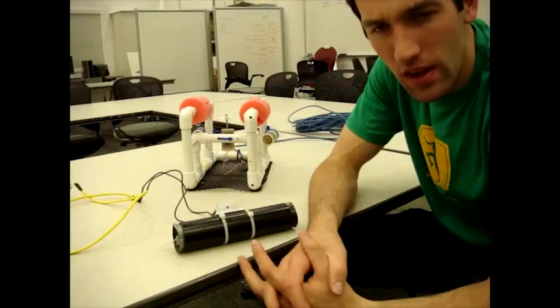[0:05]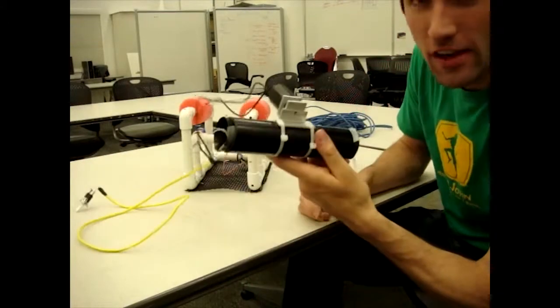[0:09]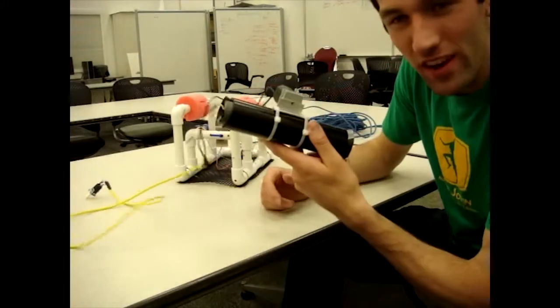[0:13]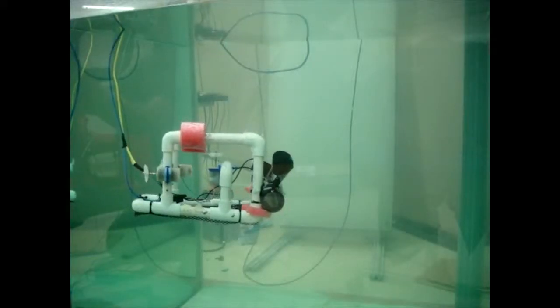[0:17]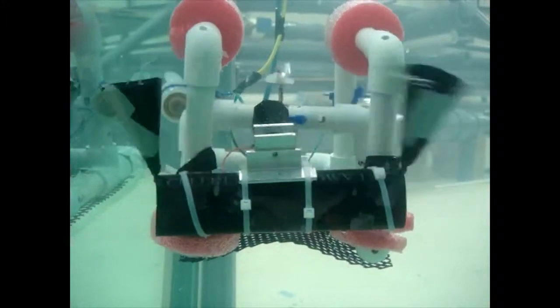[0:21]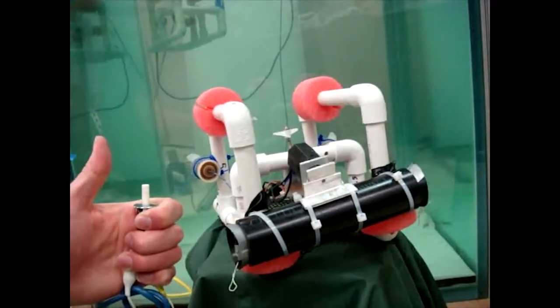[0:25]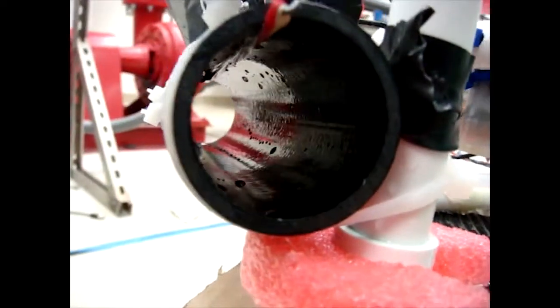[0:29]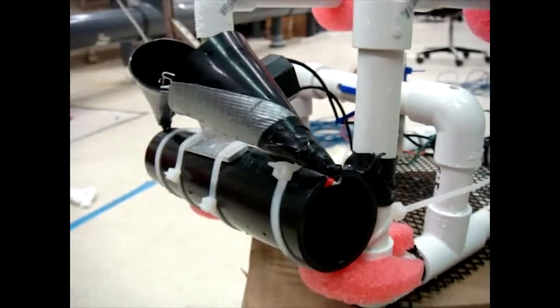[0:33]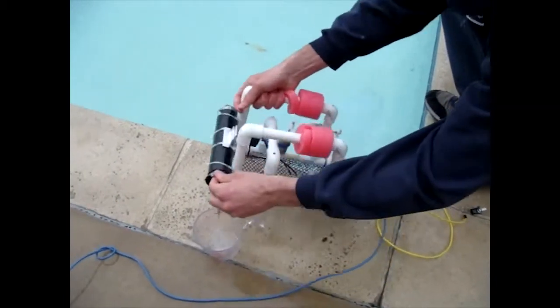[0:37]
You may ask, well, what is this? Well, let me show you. This is a water sampling device for your SeaPerch. It can be lowered to any depth or location, and when you push the trigger, it captures a sample of water. How cool is that? This sample is then brought back to the surface, where it can be analyzed and tested for things like pH level, salinity, microorganisms, and many other awesome things.
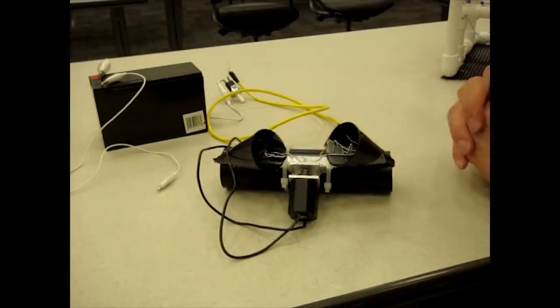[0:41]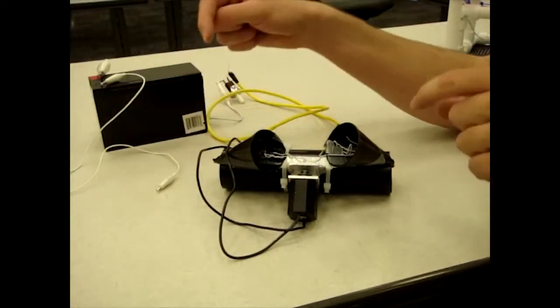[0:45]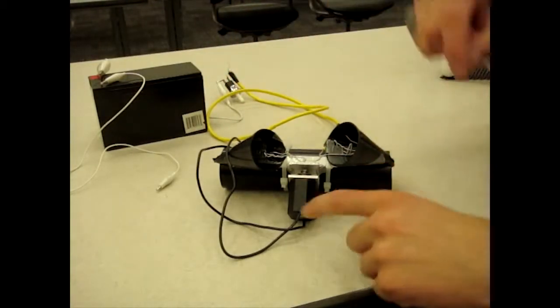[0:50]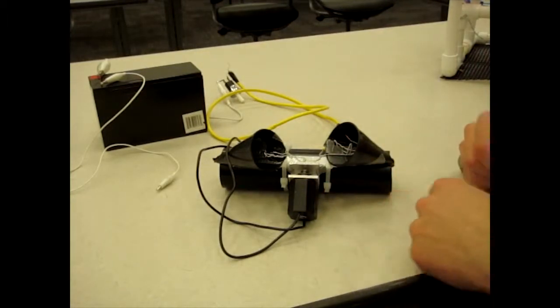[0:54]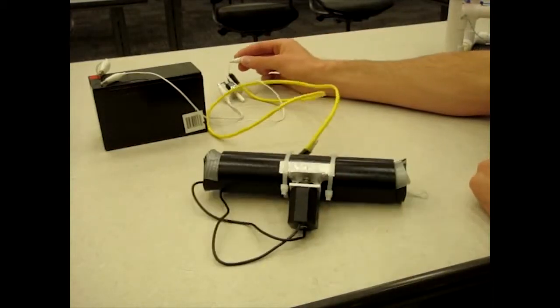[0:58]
All right, I want to show you real quickly how this thing works. We have a hollow tube with two rubber plugs on the end that's connected to a pin. The pin is really part of a solenoid valve you take from your sprinkler system. And what happens is when you hook up the solenoid to a power source, the ends collapse in. Voila! So in this video, I'm going to show you how to make this very quickly.
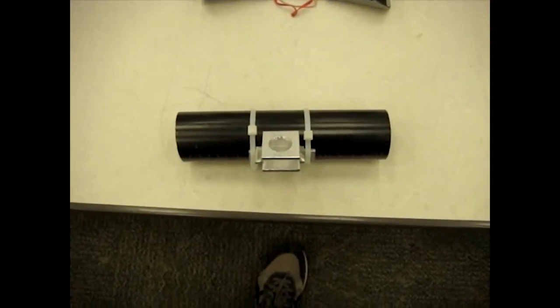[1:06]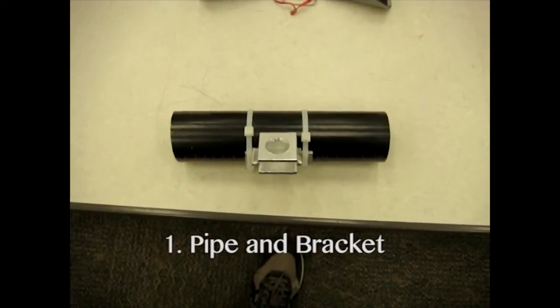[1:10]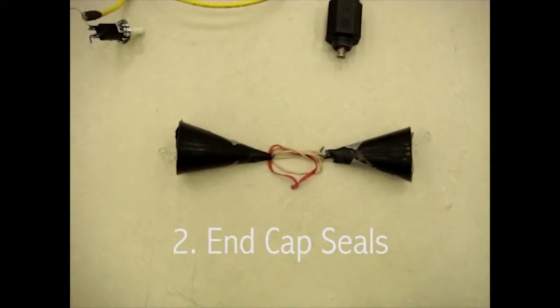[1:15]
In this how-to video, we're going to break it into three sections. First, how to make the pipe and the mounting bracket. Second, how to make the end caps that seal it. And third, how to make the electronics.
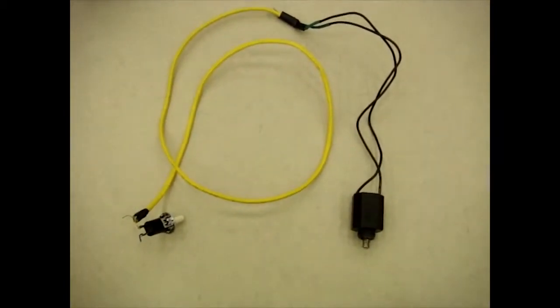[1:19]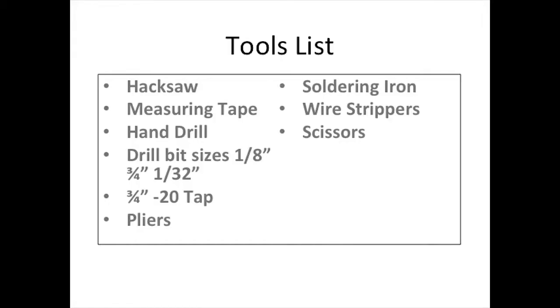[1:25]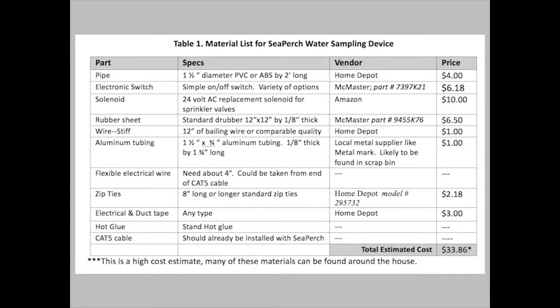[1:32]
But before we begin, we want to make sure that you have all the tools and materials necessary to get started. Shown here is a list of all the tools that you will need. Make sure that you have all of them. Here is a list of materials that you will need. Some of these you will have from building a SeaPerch, others you will have to get specifically for this project.
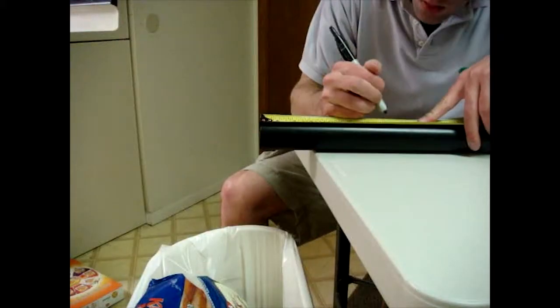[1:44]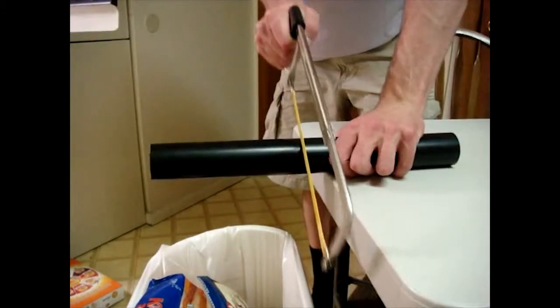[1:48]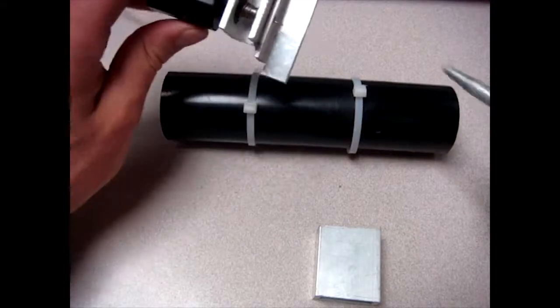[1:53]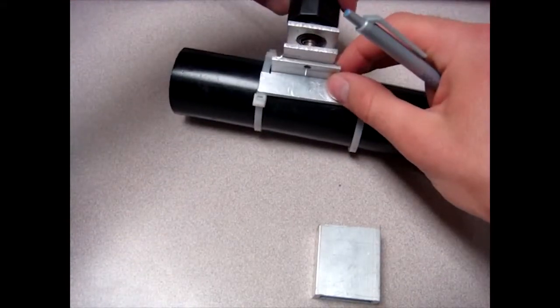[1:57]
The first step in making your tube and bracket assembly is to measure 8 inches on your tube and cut it with a hacksaw. The next step in our process is to make the bracket that will hold the solenoid valve onto the tube like this. Here is a drawing that shows you the dimensions and also some of the basic steps, but I will go ahead and show you in person some of the things to do.
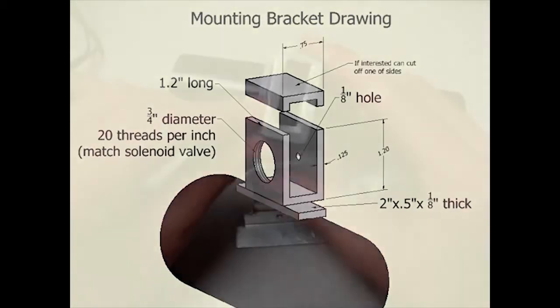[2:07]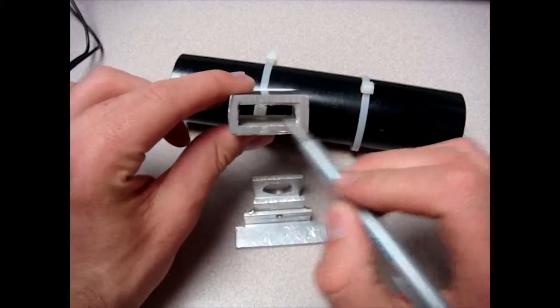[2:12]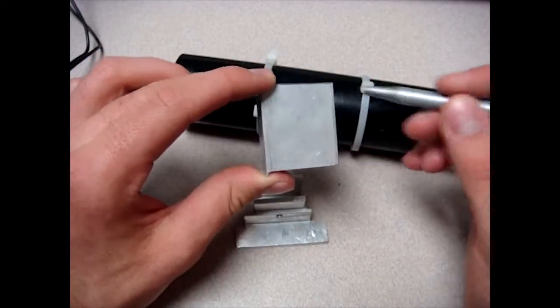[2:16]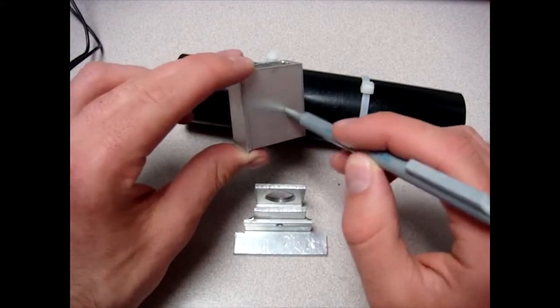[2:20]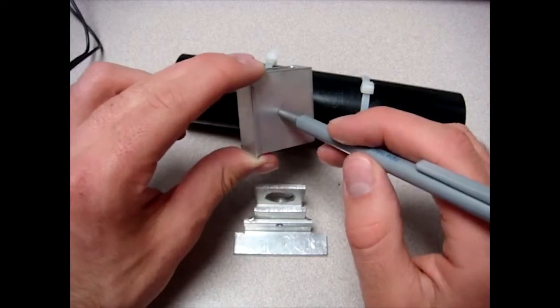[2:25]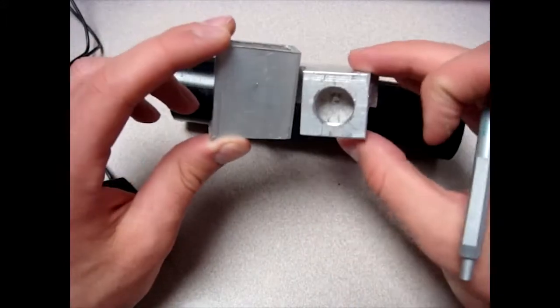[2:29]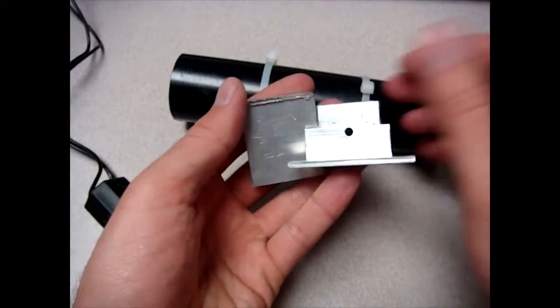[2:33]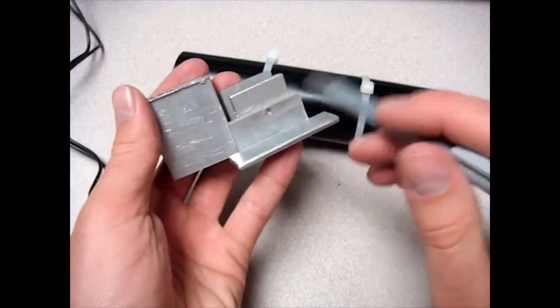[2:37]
You'll begin with a piece of aluminum tubing that is 3/4 inch tall and doesn't really matter how wide it is. You'll want to cut the length to about 1.5 inches. After you've done that, you're going to go ahead and drill a 3/4 inch hole right here through the top surface and then tap it with 20 threads per inch or whatever will match your solenoid valve. So your hole will look something like that. And then flip it directly over, in which you will drill this little hole, 1/8 inch. This is the hole which the pin should point through.
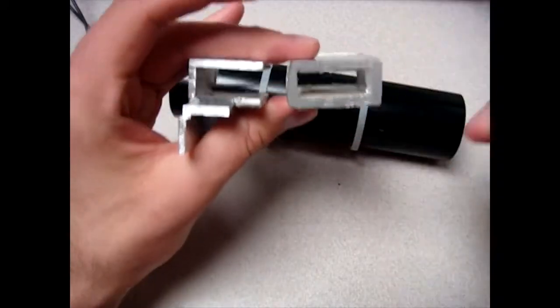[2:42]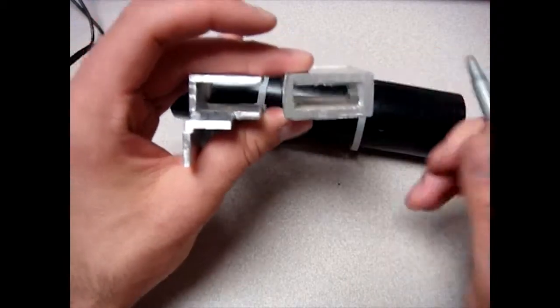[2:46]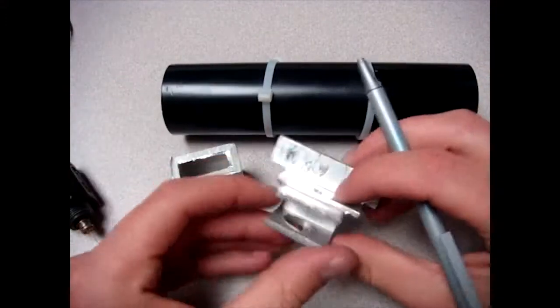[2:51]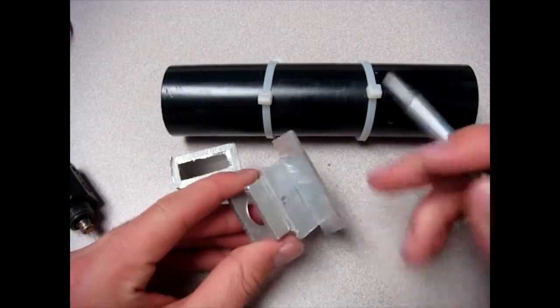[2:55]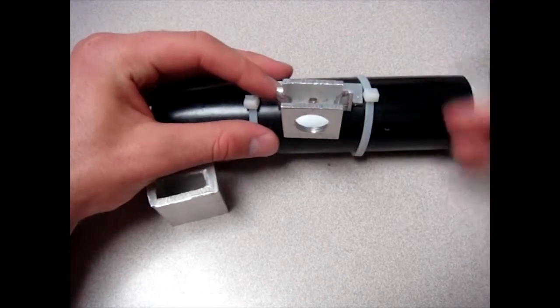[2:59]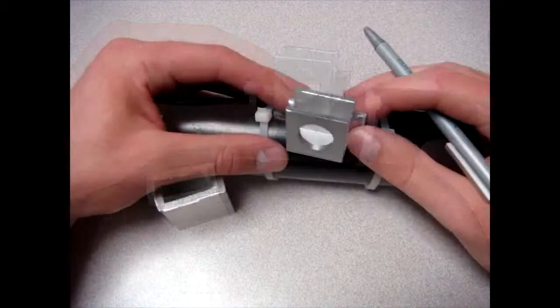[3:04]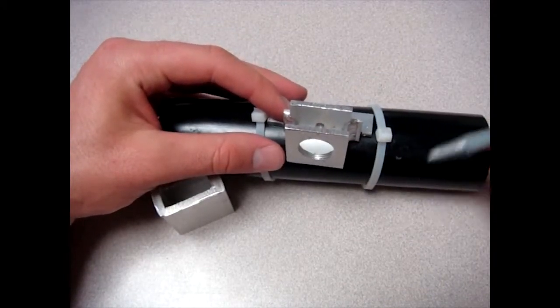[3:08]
After you're done, if you want to, you can go ahead and cut off one of the ends of this tubing so it has another open face, but that is not required. Then you'll want to get a piece of aluminum that you can attach to the bottom through gluing or welding that will sit on the tube and which can then have zip ties put over the top of it to hold it in place. Now don't forget to go back to the drawing and look at that, and that will tell you all the rest that you need to know to make this piece.
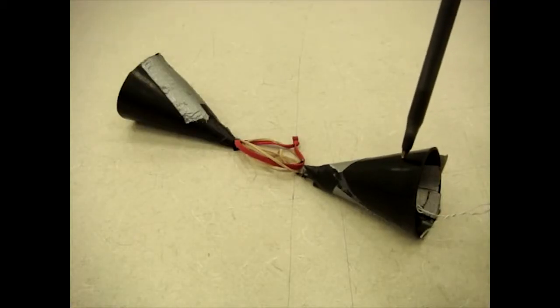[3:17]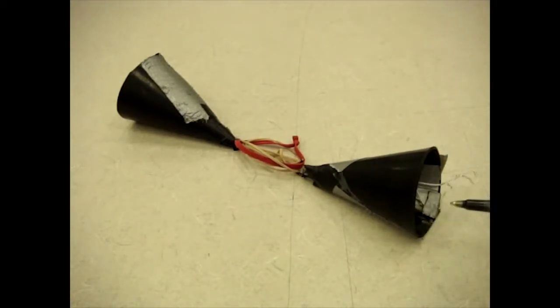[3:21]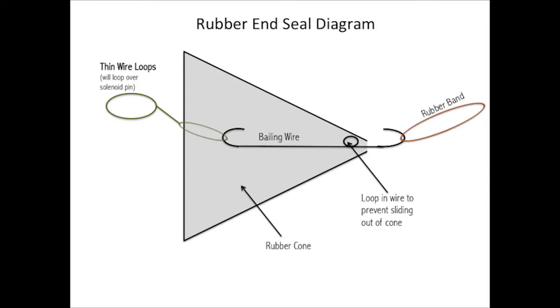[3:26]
Next is to make the rubber end seals. There are three parts to this section. First, make the rubber ends. Second, put the hooks in. And then third, make the loops that will attach to the solenoid pin. Here is a schematic of what one of the end caps will look like. You'll want to refer back to this schematic during the next couple of steps.
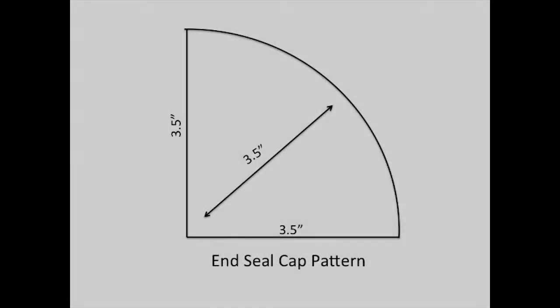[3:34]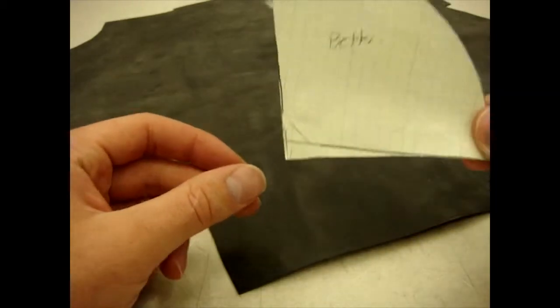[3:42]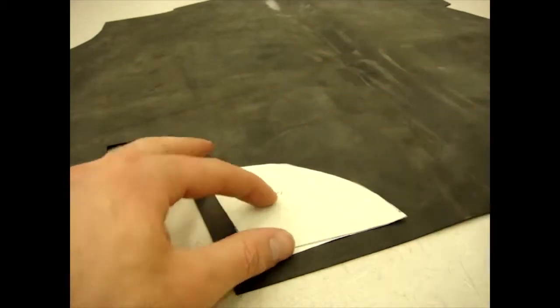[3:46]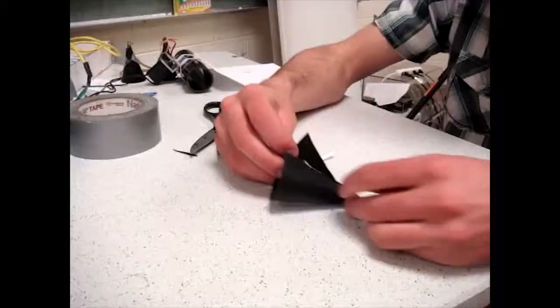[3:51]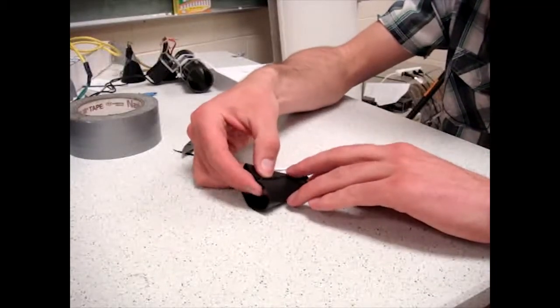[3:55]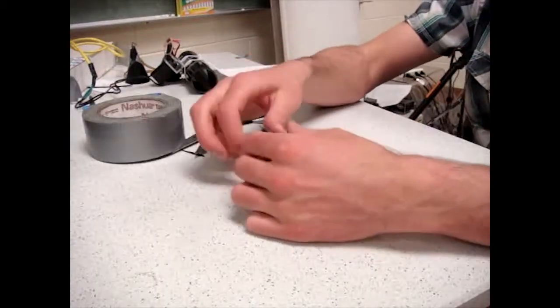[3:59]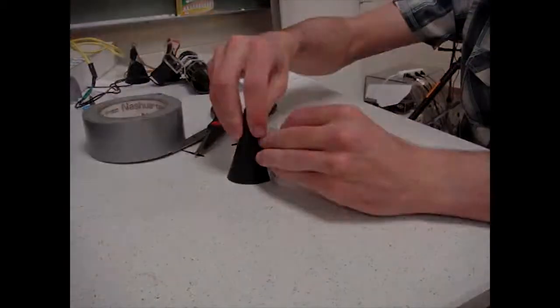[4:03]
To make the rubber ends, what you'll want to do is to take these dimensions that you see on the screen and draw them and cut them out on a piece of paper. Then take the paper, put it on the rubber, and trace out on the rubber, followed by cutting the rubber with a pair of scissors. After you have cut out the rubber, you will want to roll the rubber up into a cone shape and glue it together. The glue, if you're using hot glue, will probably not hold strong enough, and you will also want to use duct tape.
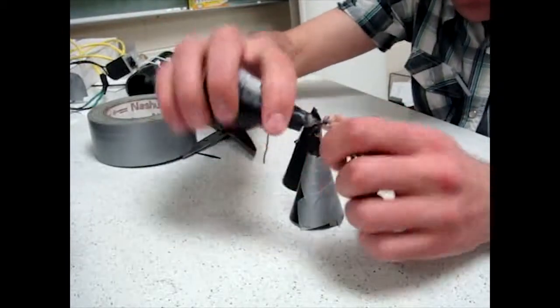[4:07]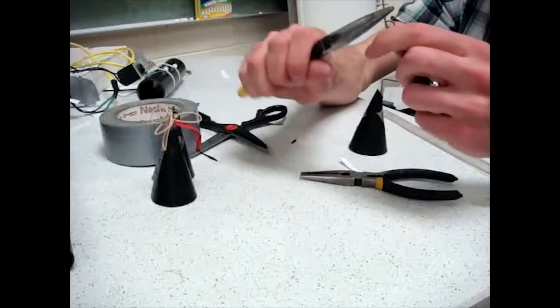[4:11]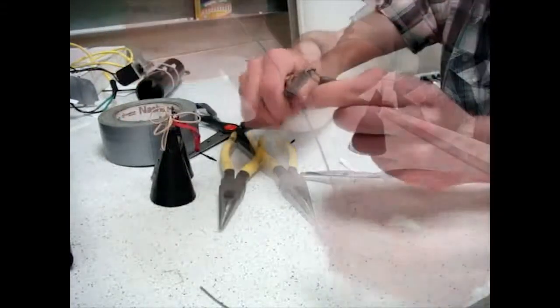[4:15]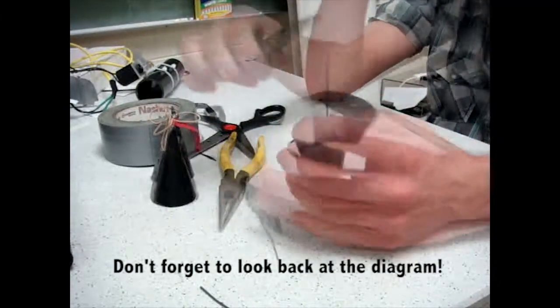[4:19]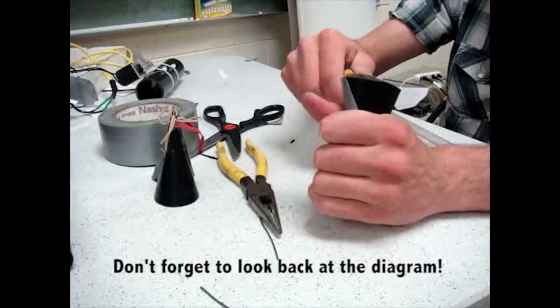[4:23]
After making the rubber cones, you will want to make hooks to go in the ends. You'll want to take about 6 inches of baling wire and make a loop in the middle so that it doesn't fall through the cone. Then insert it into the cone and make hooks on either side, making the hook on the outside very short and the hook on the inside towards the edge, like this.
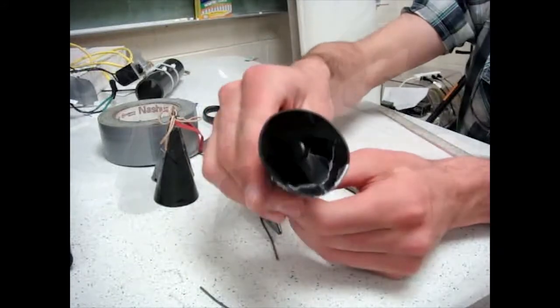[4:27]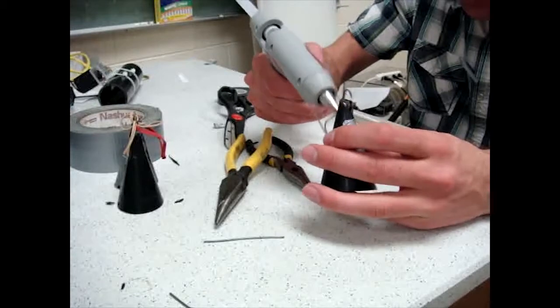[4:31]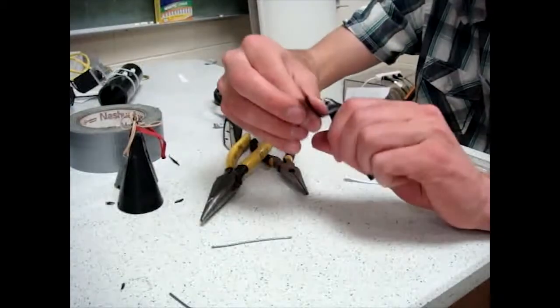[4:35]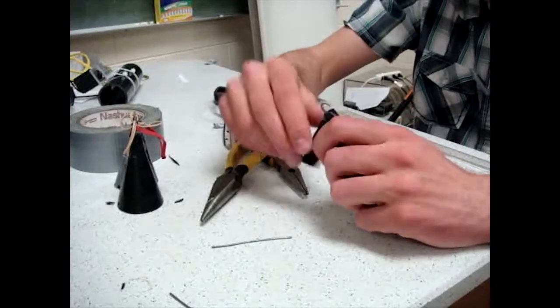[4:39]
Once you're done making the hooks, you will want to completely seal off the end so that no water can leak through by using hot glue and electrical tape. Make sure you repeat this twice to make the two end caps.
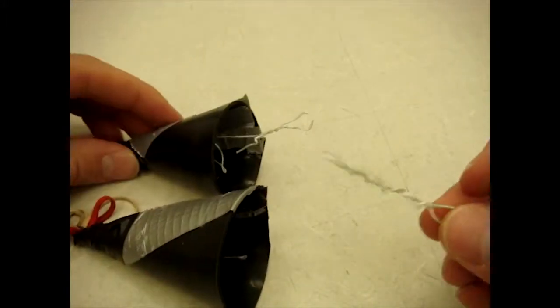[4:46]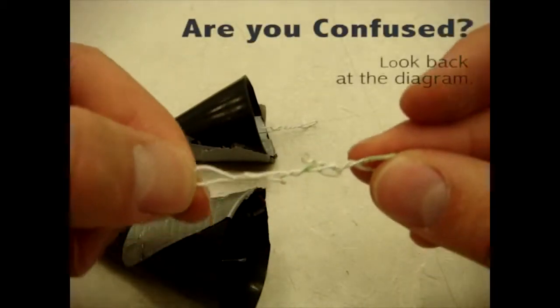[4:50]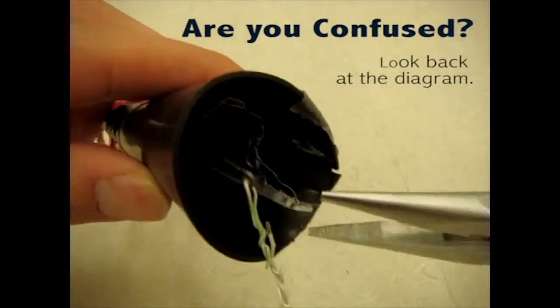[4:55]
Once you've made your two end caps with hooks in the end, you will then want to make little loops to go in the end. Use your thinner wire and make two loops on each end and attach it to the hook in the inside. Then take a pair of pliers and pinch your hook closed so that it doesn't fall off, like so.
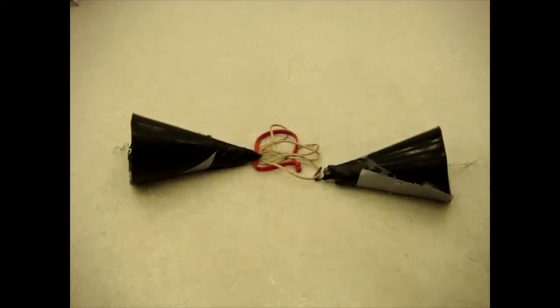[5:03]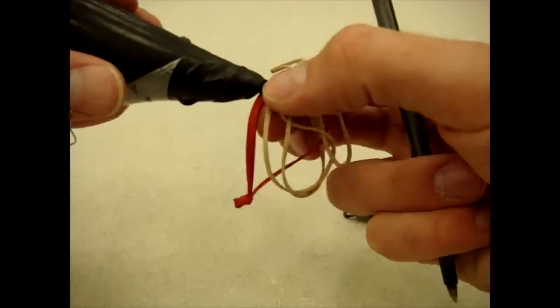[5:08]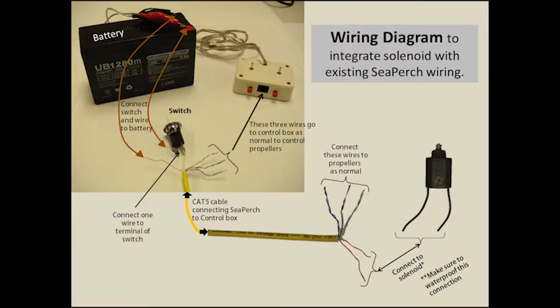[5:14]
When you have attached your two loops to the end, you're ready to put rubber bands on one side and pinch that hook closed. We are now ready to work on the third section, the electrical parts of this instrument.
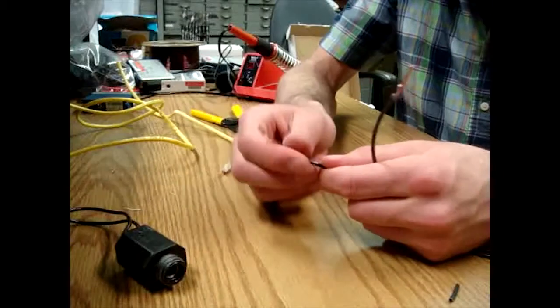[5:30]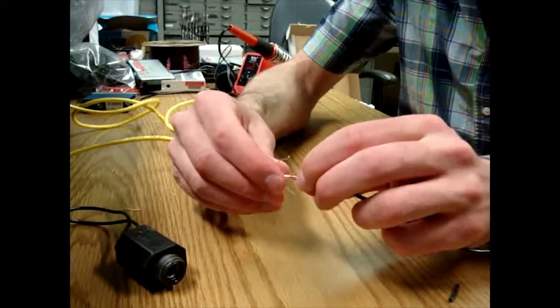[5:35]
This diagram should show you everything you need to know how to run the electrical wire for your sampling device. It may seem like a lot, but it's actually pretty simple. You just take some time to pause it and study it. You will see there's a solenoid in the bottom right corner. Connect your solenoid cables to two of the cables in your Cat5 cable.
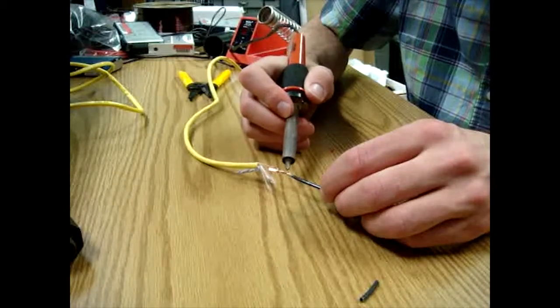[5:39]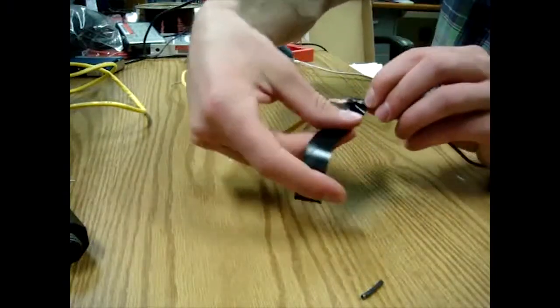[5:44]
This connection needs to be waterproofed, so the first thing you'll do is solder the wires together. Second, hot glue it, and before the hot glue dries, wrap it in electrical tape.
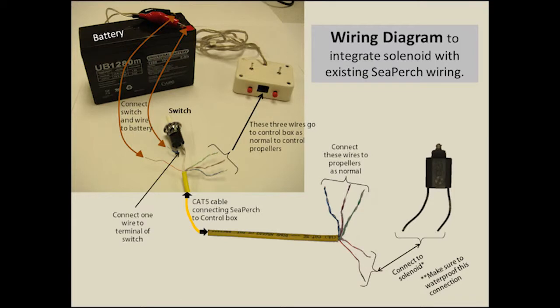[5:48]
On the other end of the cable, where it connects to the control box, take that same color of wire and connect one of those wires to the switch. Then take the other wire and connect it to one of the terminals of the battery. Then take a piece of wire or an alligator clip and connect from the other terminal of the battery to the other terminal of the switch.
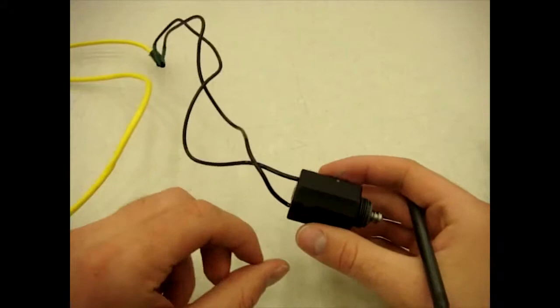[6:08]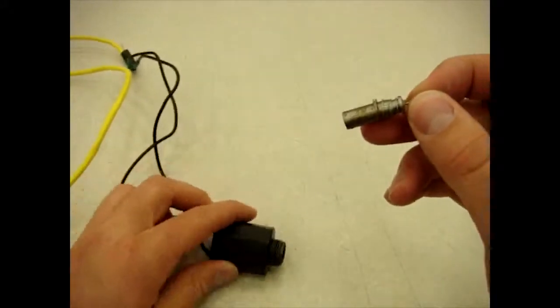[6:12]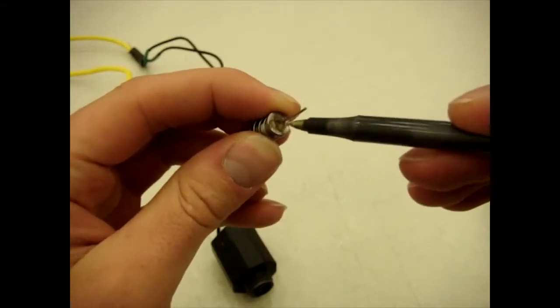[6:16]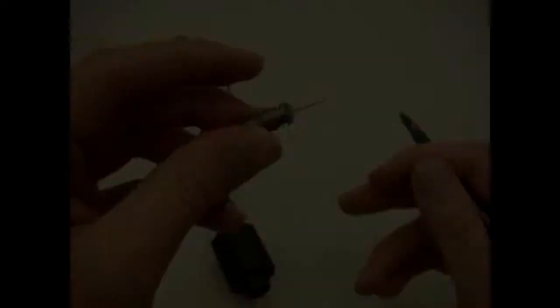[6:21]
The final step in finishing off the electronic portion is to take the pin out of your solenoid and to drill a little hole into the face of it and to put a paper clip in with some hot glue.
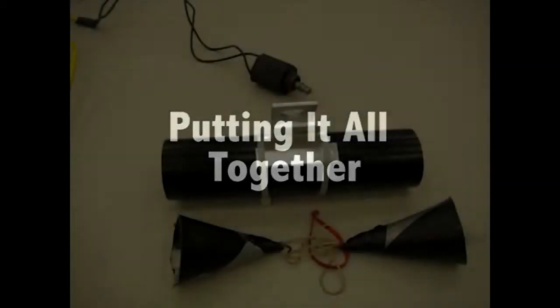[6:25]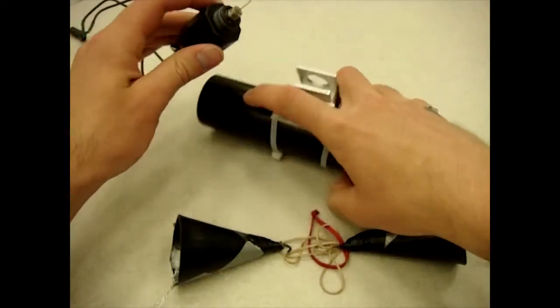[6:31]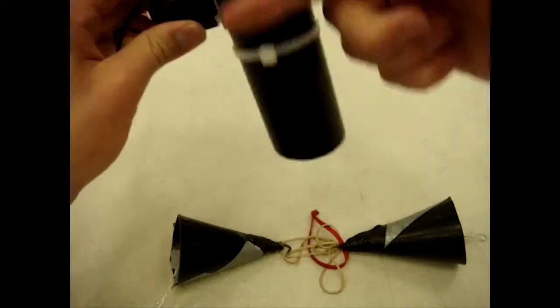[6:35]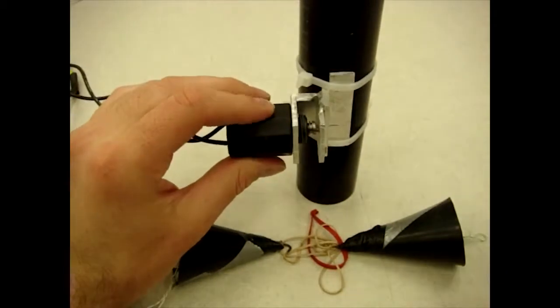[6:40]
Now that we have all of our different pieces of our instrument made, it is time to put it together. This is pretty simple. You first want to take your solenoid and put it into the hole of the bracket, like this. The pin should be sticking out of the end.
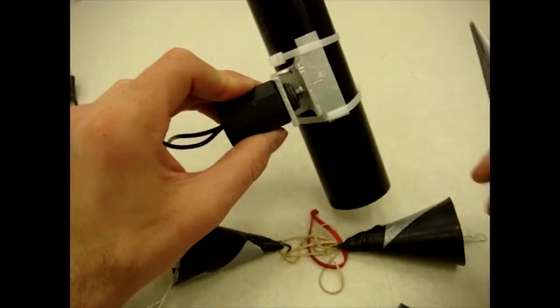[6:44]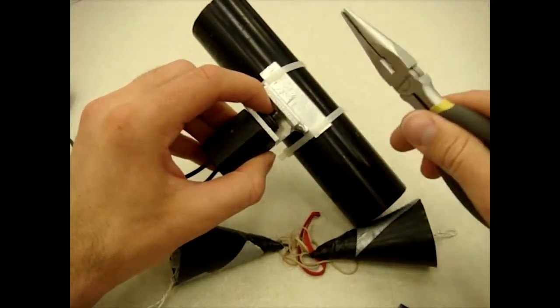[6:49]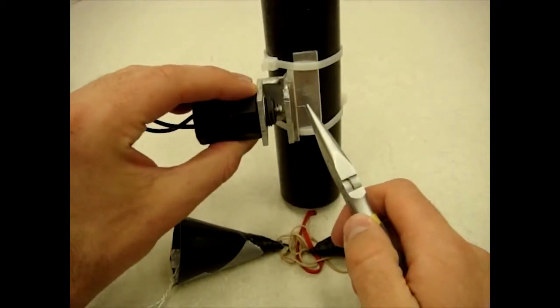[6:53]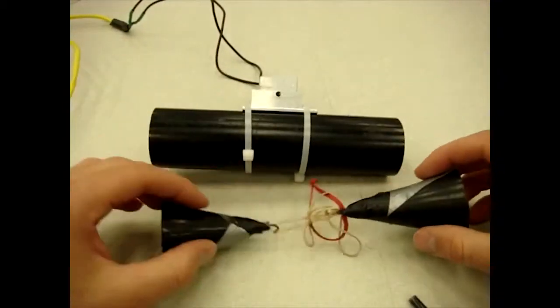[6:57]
What you'll want to do is then push the pin in as far as it goes, hold it, and then trim off any extra. That way, when the pin retracts, it goes all the way in and not just part of the way. Next, you're going to want to put your end caps in.
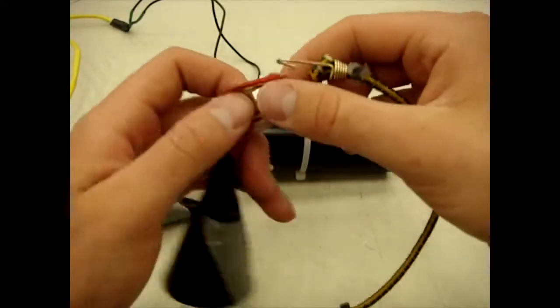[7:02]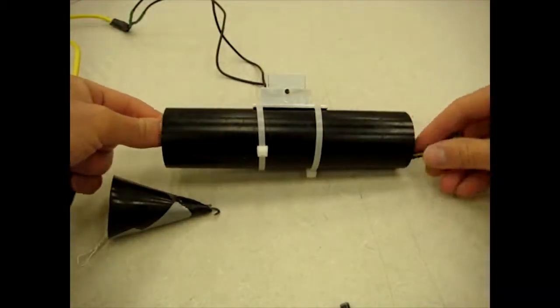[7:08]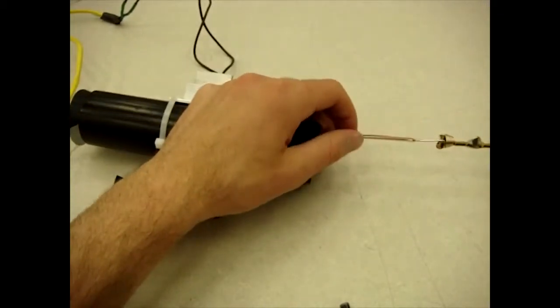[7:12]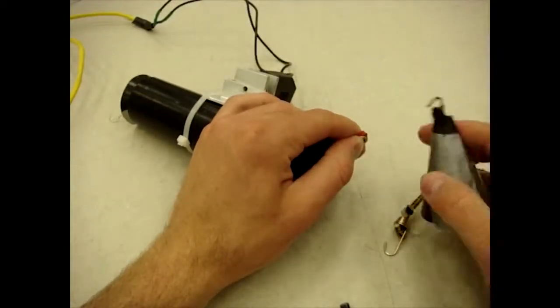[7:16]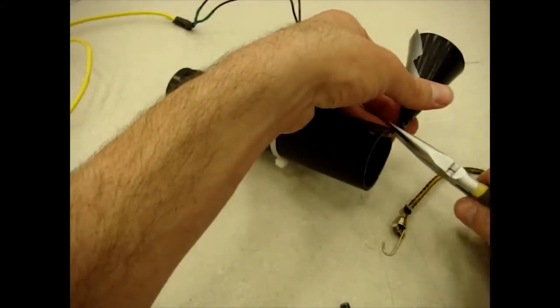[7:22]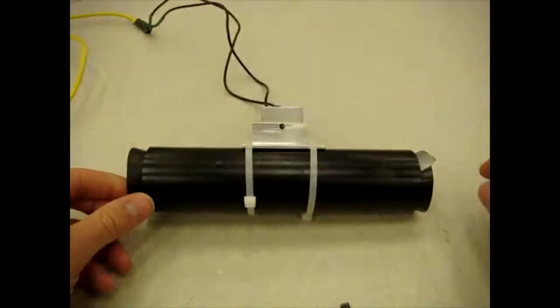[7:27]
This can be a little tricky, but if you take any type of string with a hook on it and hook it on to your rubber band, and then take that string and thread it through so that one end is in, and then pull the string through until the rubber band shows through. Then, with your end cap with the hook on it, go through and hook it. You may want to take your pliers and pinch them. And then you have it together.
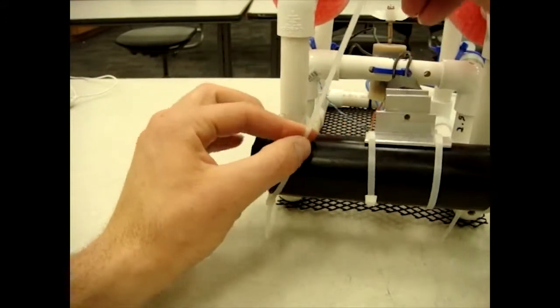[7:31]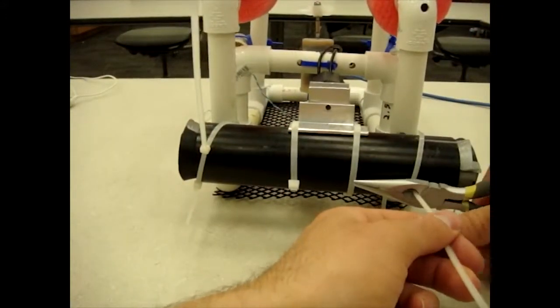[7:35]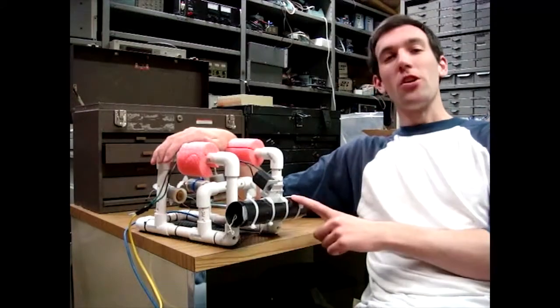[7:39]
Now it is time to mount the sampling device onto the SeaPerch. I recommend mounting it onto the back using zip ties. Congratulations! You have just finished building a water sampling device for your ROV.
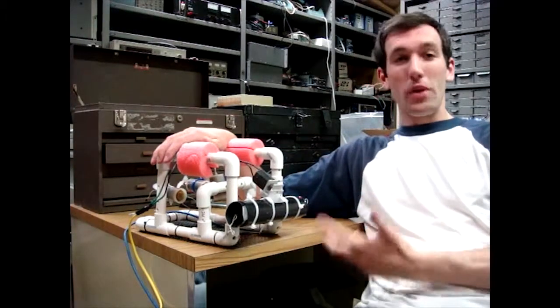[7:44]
Now, to finish it off, we want to make sure that it works. There's two things we need to test. We need to first test that the solenoid valve moves up and down, and second, to see if our water sampling device leaks. So let me show you how you can test each of these.
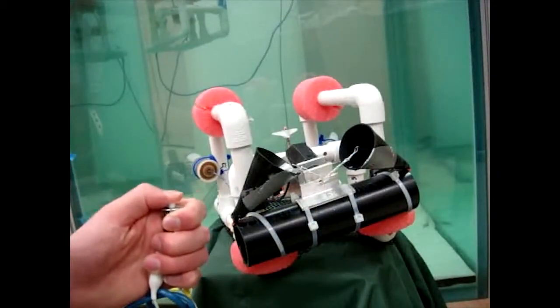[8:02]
To test to make sure that your solenoid works, what you'll want to do is to set everything up, like you see here, and then go ahead, hook it up to the battery, and push the trigger.
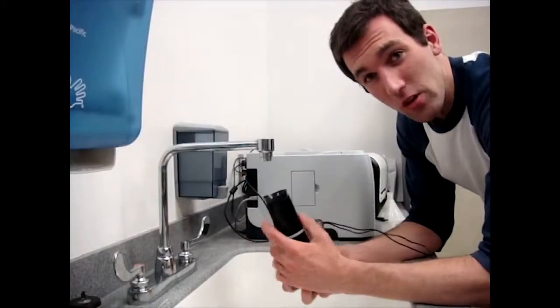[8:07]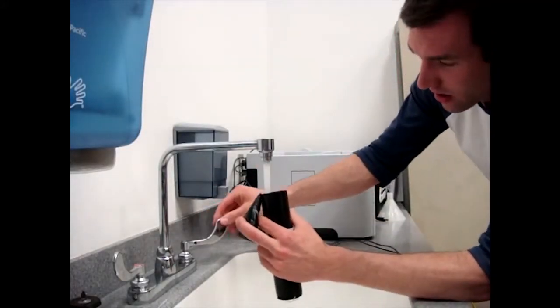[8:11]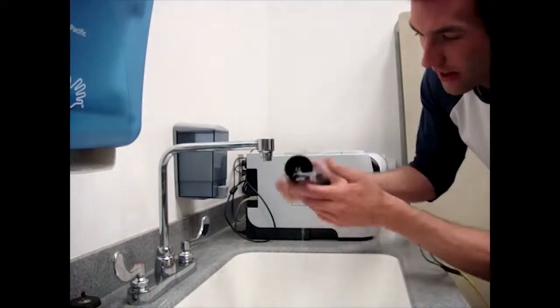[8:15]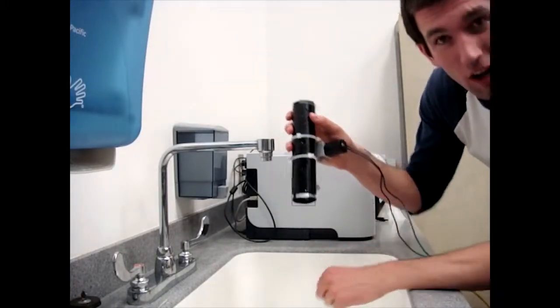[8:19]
A simple test you can do, just to make sure that your end seals are sealing, is to bring it to the faucet, fill it up with water, and see if you're leaking. I'm leaking on that side, but not that side. So I got some work to do.